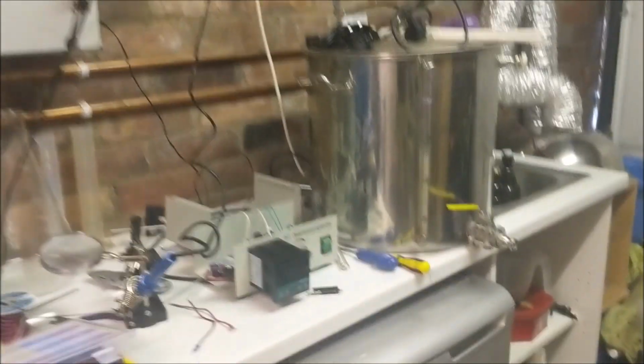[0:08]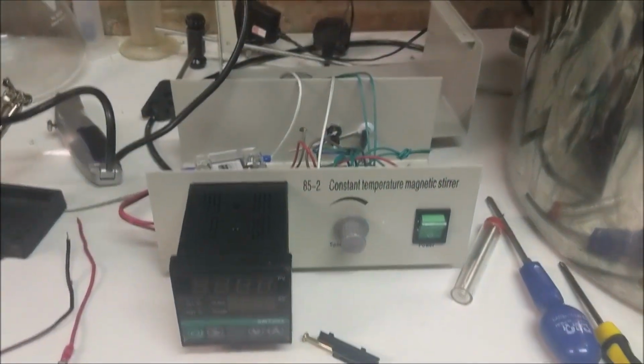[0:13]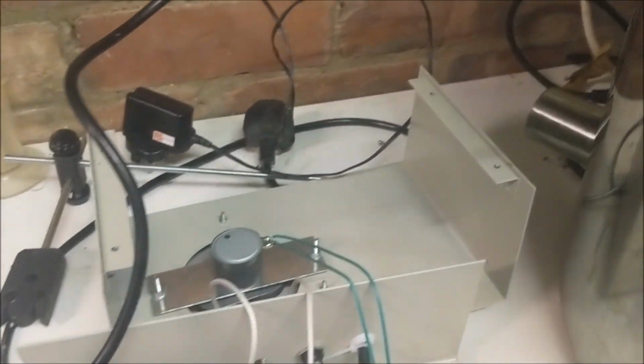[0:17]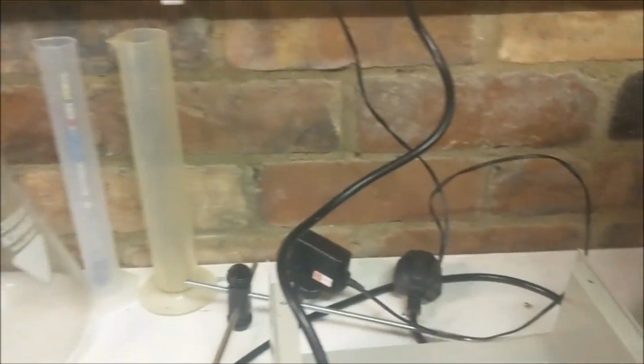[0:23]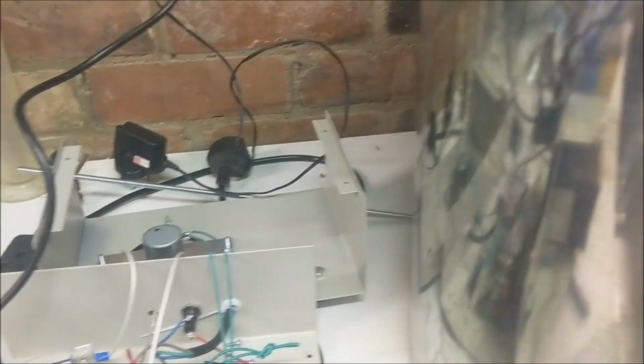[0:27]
Hello, quick video today about rebuilding or fixing this temperature controlled stir plate. So originally this had the rubber sheet controller that came with it. In here it's this that was basically unable to hold the temperature vaguely close to where we needed it. So that's been pulled out. All the stir plate stuff is still in place.
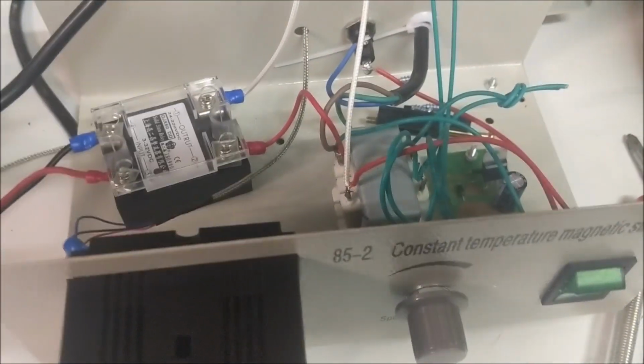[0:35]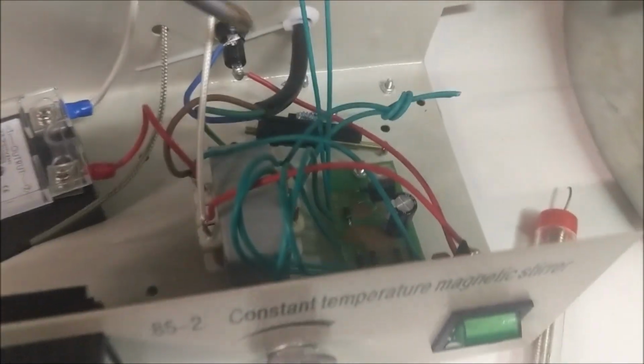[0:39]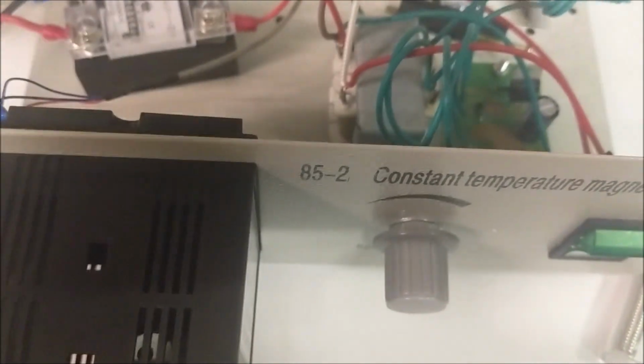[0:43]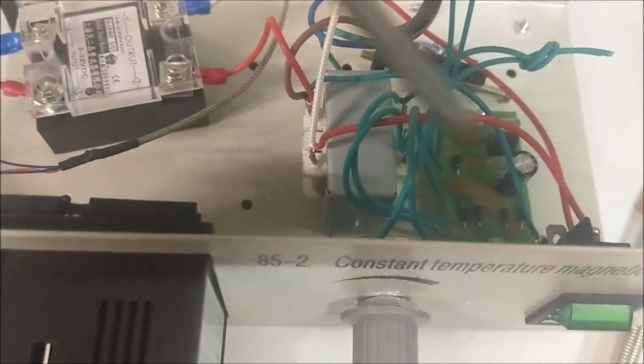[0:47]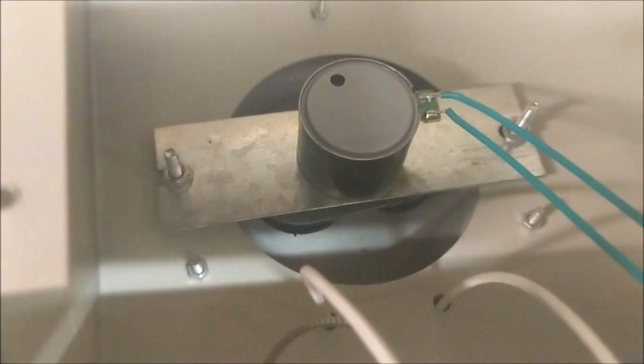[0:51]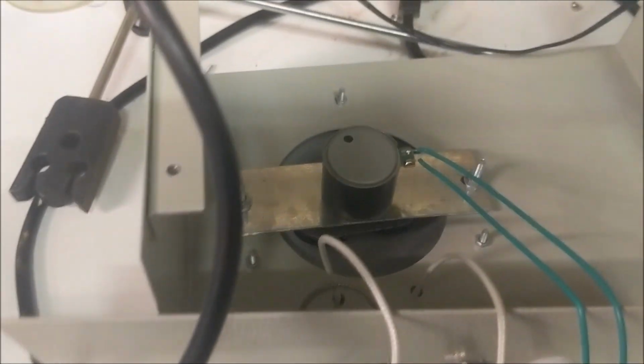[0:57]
So if we look inside here, our power comes in. Let's get a pointy thing. Our power comes in here, goes through this transformer here, and all this side was all done in really obvious green wires to make it really easy to tell what's going on. That's controlling the motor up here, which spins the magnets, which you can see down there wobbling to and fro. That side should still be all the same.
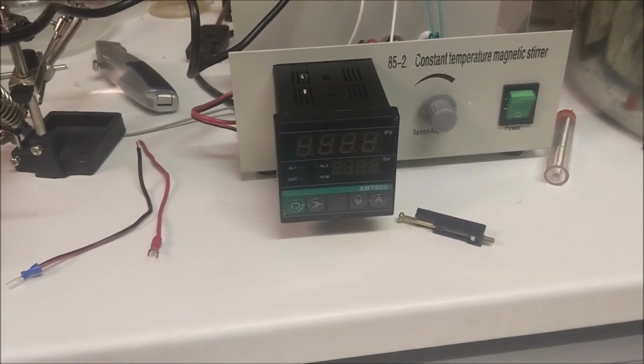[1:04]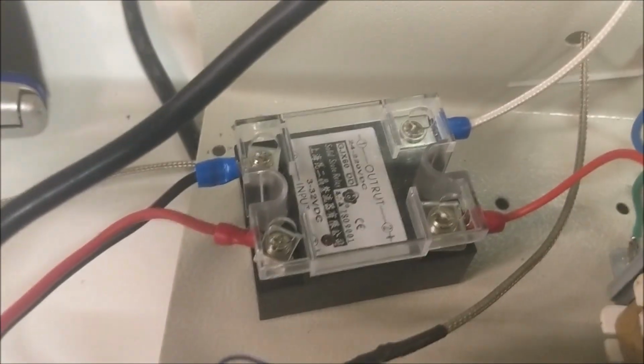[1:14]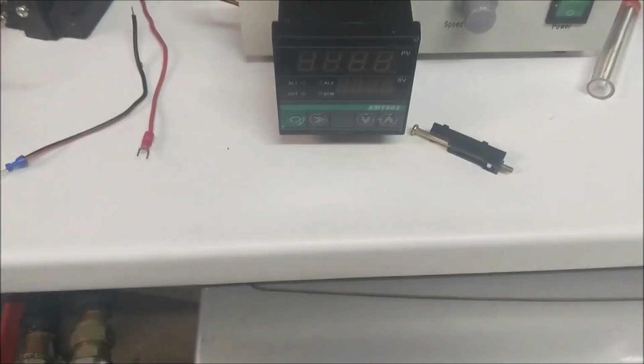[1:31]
Now what I've done is on the other side I'm swapping in one of these PID controllers that happens to fit the gap precisely. I believe that's an 803 controller with an SSR on the output, and that then goes up there in here and will control the temperature theoretically. So I've done most of the wiring so far. I just need to wire on the power supply for the PID, which is what these bits of wire lying around over here are for.
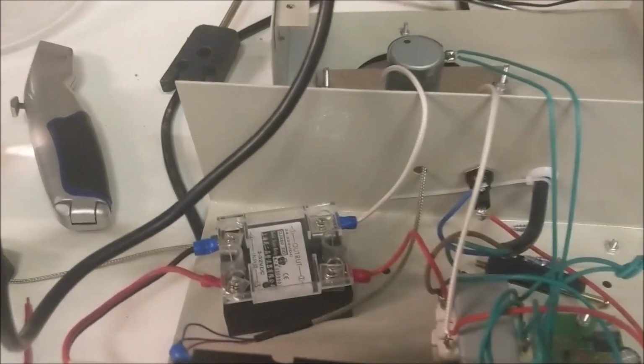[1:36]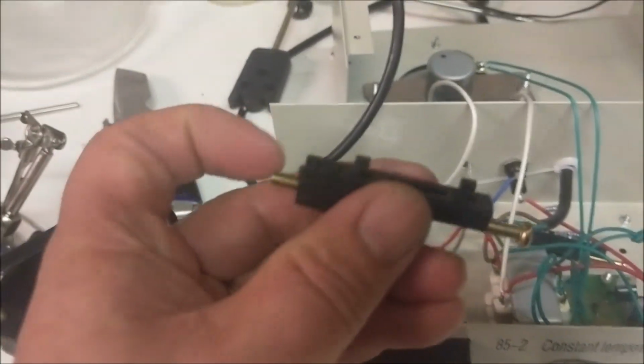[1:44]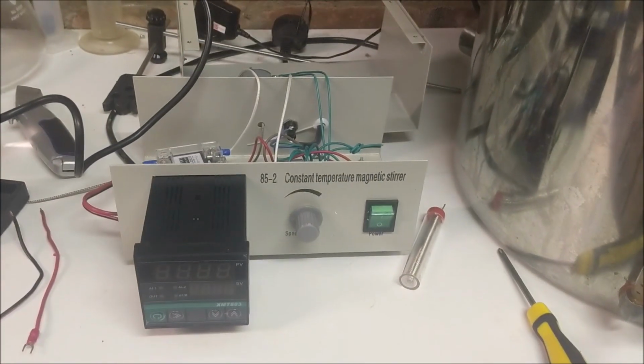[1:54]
So I thought I'd have a quick tour around while I still had it open, and then we will look at it properly when it's closed. But one really hard remaining challenge, these clips that are designed to hold the PID in place, I've got to get one underneath somehow, and that's going to be interesting and challenging. Excellent. I'll show you it when it's up and running in a little bit.
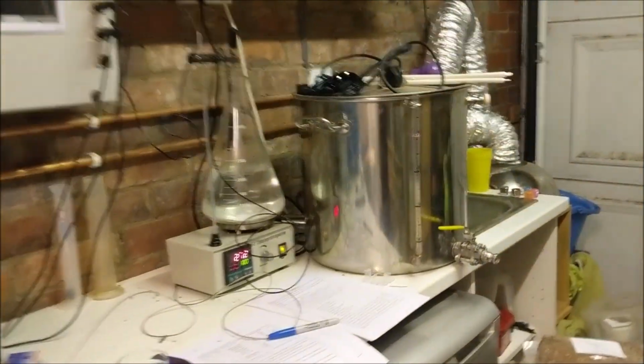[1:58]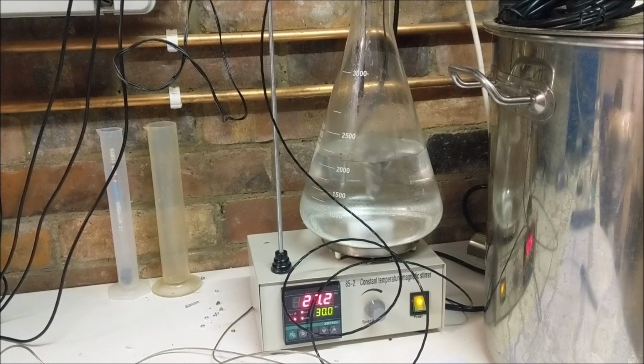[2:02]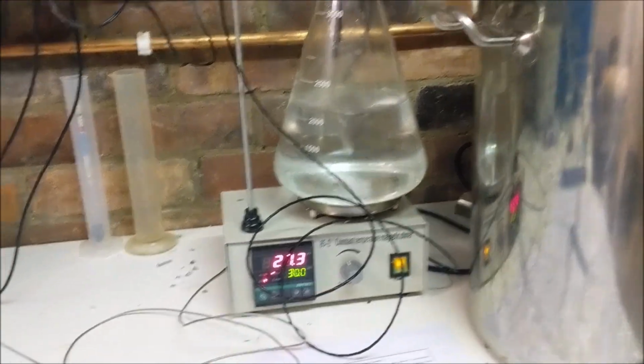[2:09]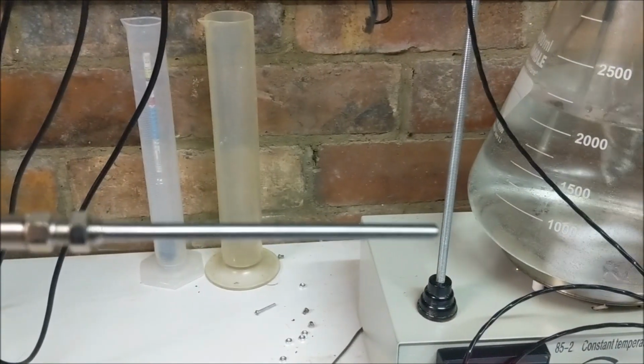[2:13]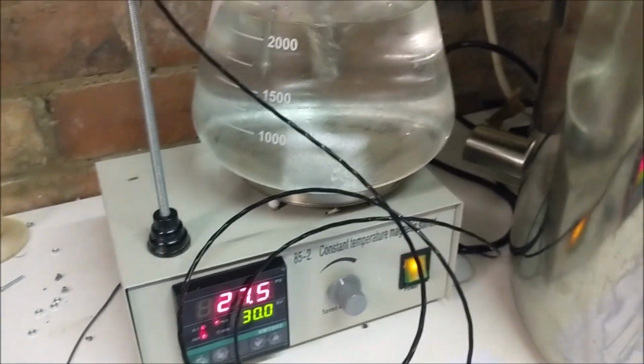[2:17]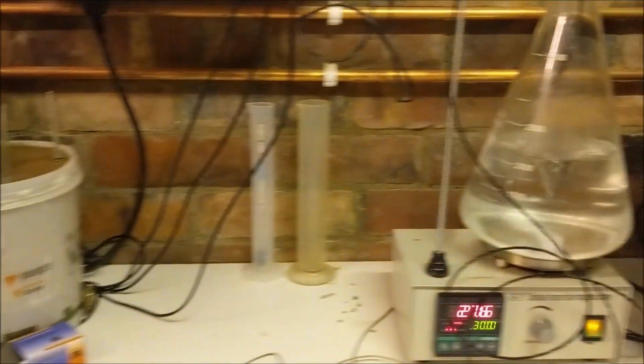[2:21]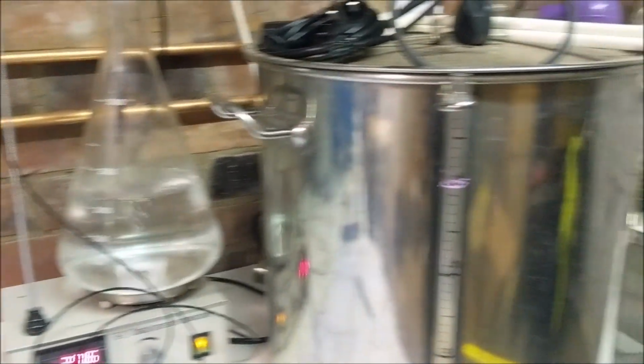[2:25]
Hello and welcome back to a slightly epic, more epic, temperature controlled stir plate setup. First change from what I had when you saw me putting it together previously is I put in a temperature sensor, supposed to be PT100, that came off the internet. If you set it accurately at say 0 degrees C in some lovely iced water, it was then 5 degrees off at 20 degrees C, so basically useless.
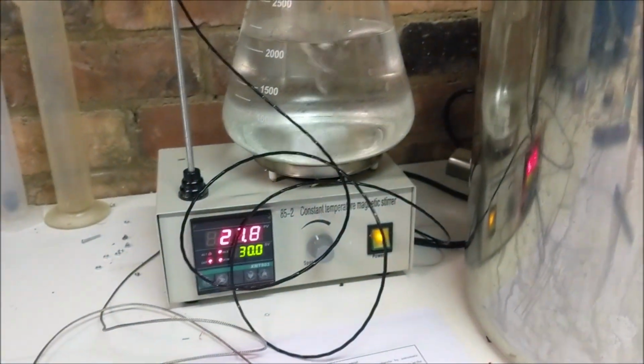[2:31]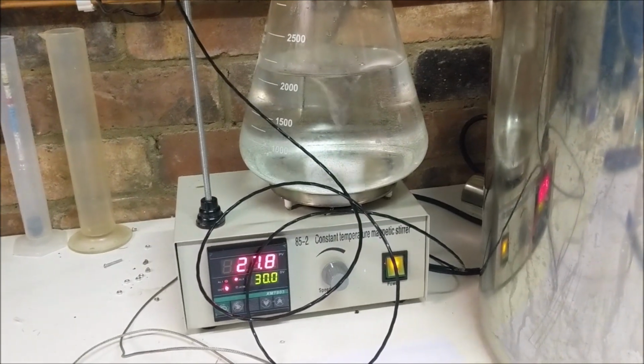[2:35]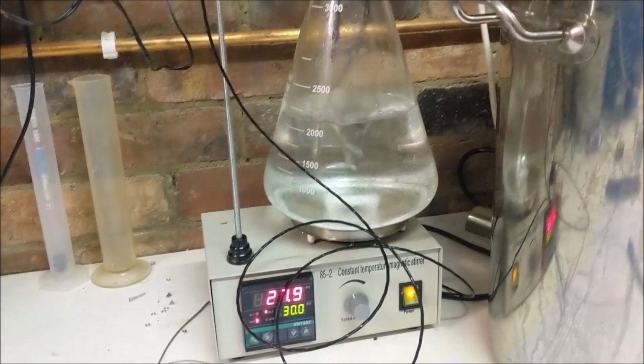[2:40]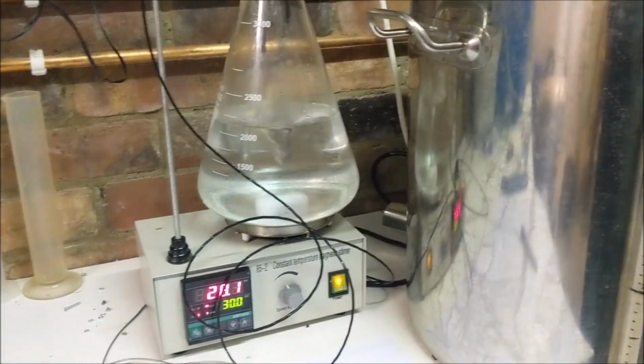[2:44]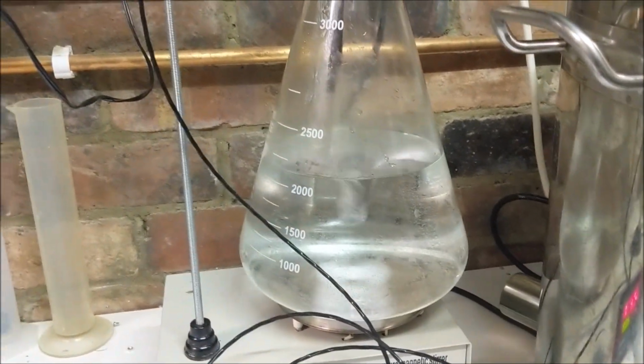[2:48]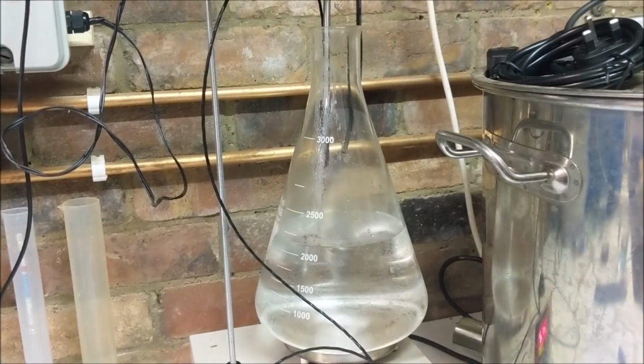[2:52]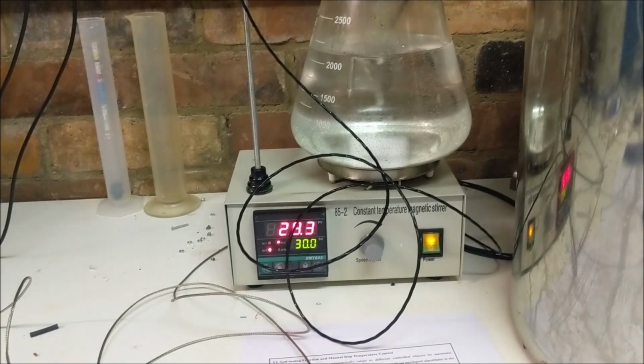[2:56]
So I bought a slightly nicer one, which is now the one that's connected up there, and that appears to be, well, reasonably precise, and with a little bit of offset it's accurate, which is nice, sort of two things you need, and it's accurate over quite a wide temperature range. It's an improvement. So after that minor struggle getting some new bits, I then tried to get the whole thing working, and struggled.
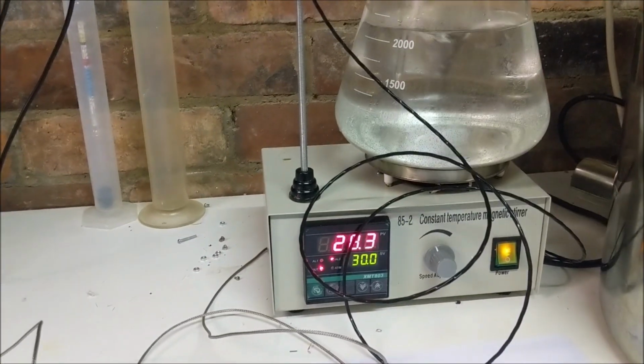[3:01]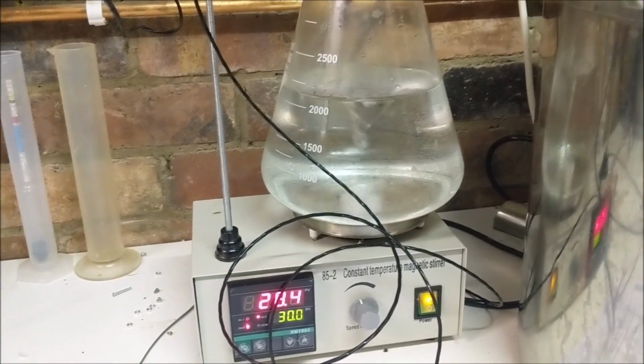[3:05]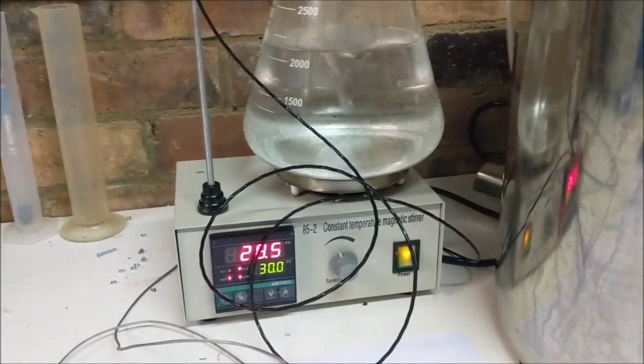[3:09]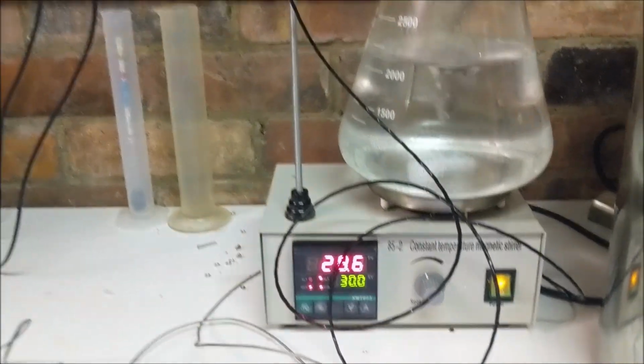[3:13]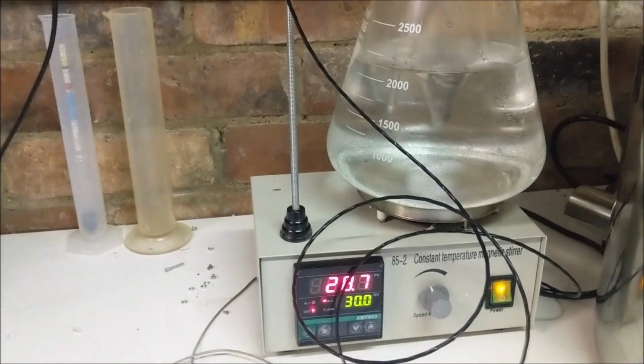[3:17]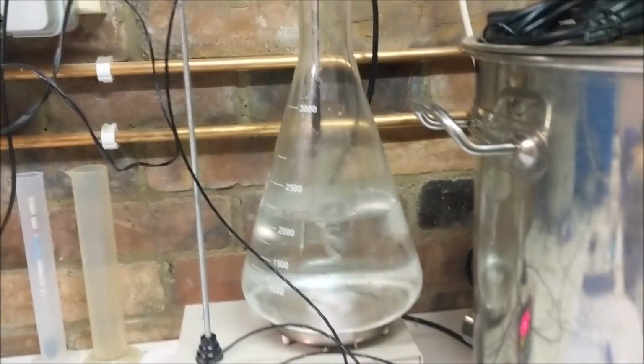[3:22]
This thing seemed to be heating when it's supposed to be cooling, cooling when it's supposed to be heating. After a bit of fiddling around, I worked out that firstly it was set to control the fridge rather than the heater, and secondly, in its default state it was set as a switched controller, like the one I've got down here on the fridge. No, I haven't got it there anymore.
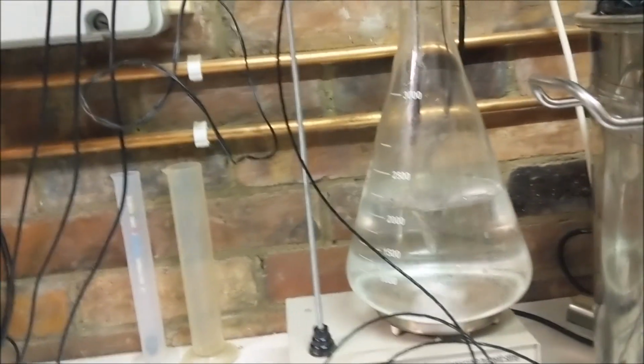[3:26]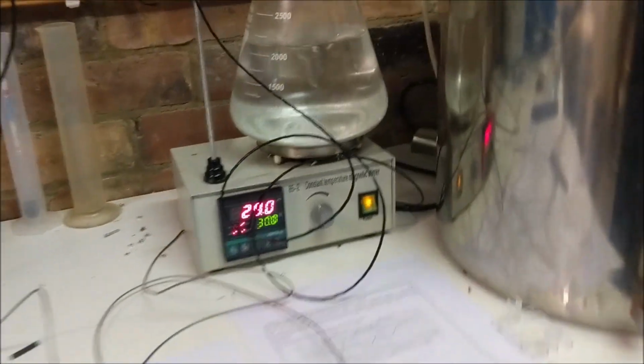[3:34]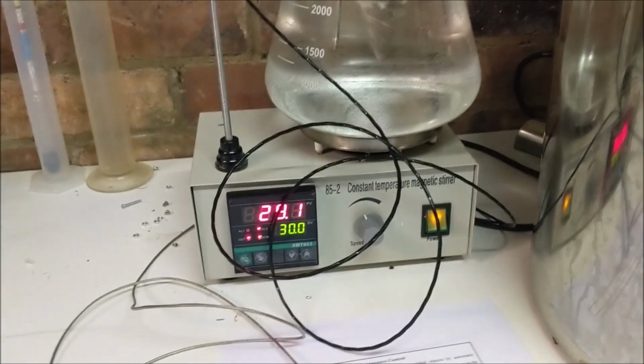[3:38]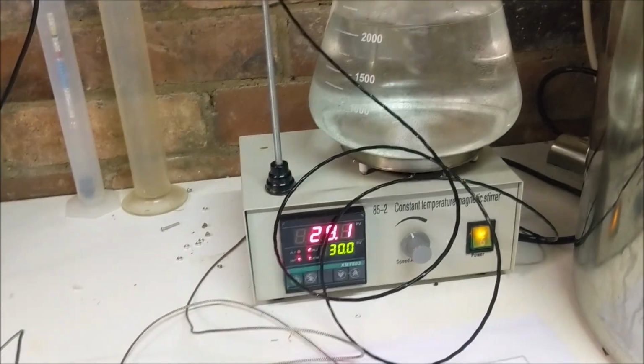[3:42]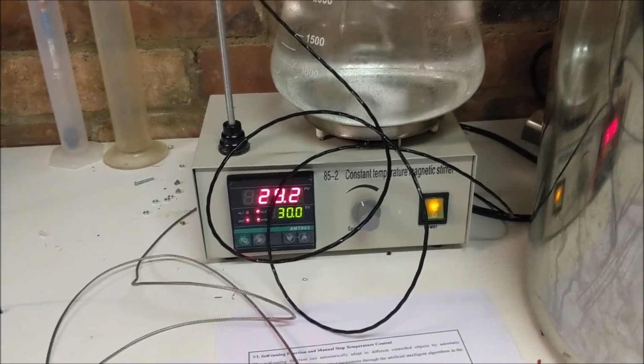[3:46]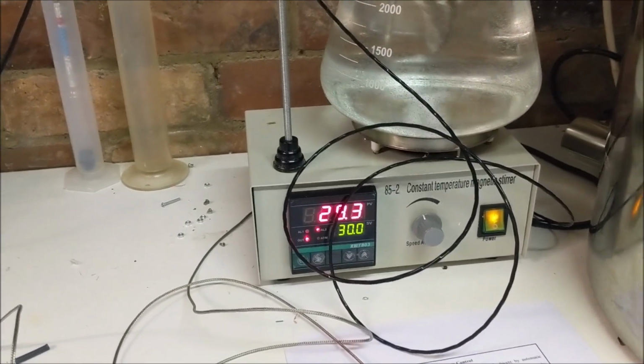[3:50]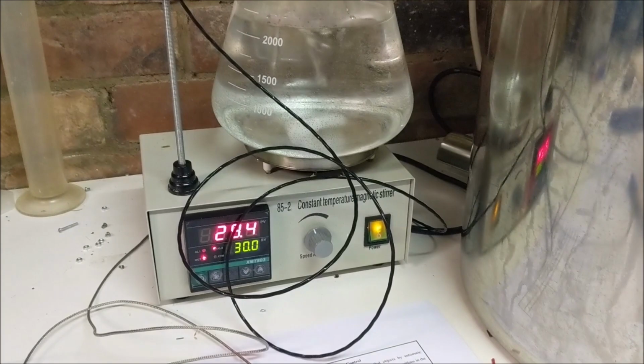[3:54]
Like the one in my brewery control box, these things, he says, going down to have a look, those little things, that's a switch controller. So you needed to change the mode, and that's hidden in some incredibly obscure menus. Controls of this are slightly odd. The instructions are obviously translated from the Chinese via the Serbo Croat, so are a little bit hard to actually understand. At the moment it's trying to run an auto tune cycle, and I'm going to see what happens. Hopefully we'll get it working properly shortly.
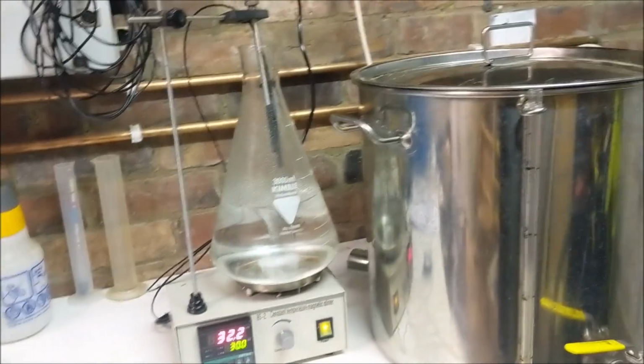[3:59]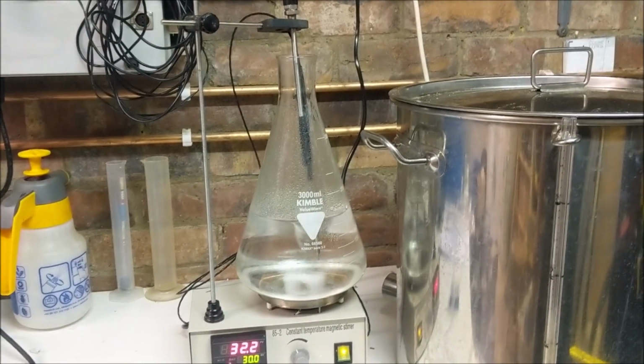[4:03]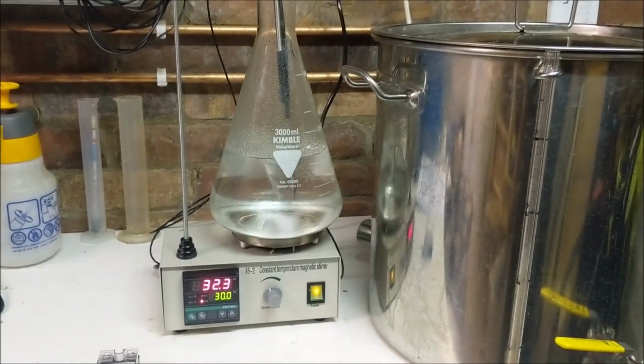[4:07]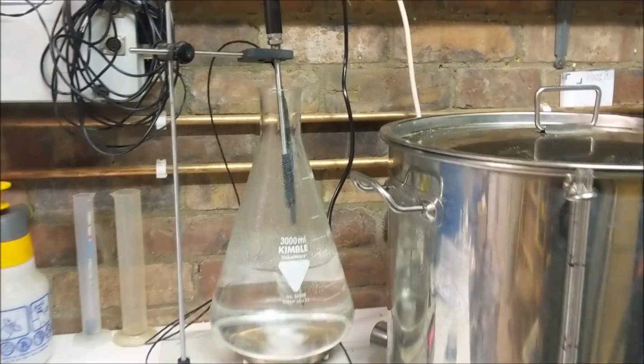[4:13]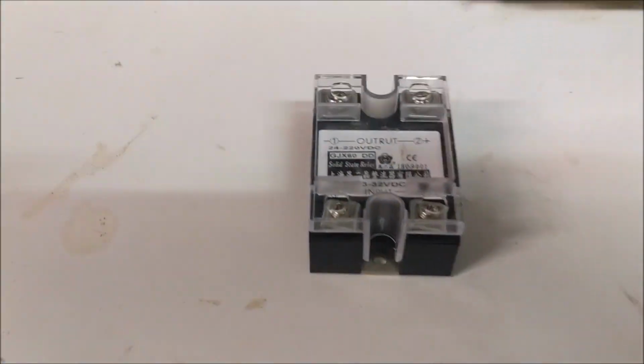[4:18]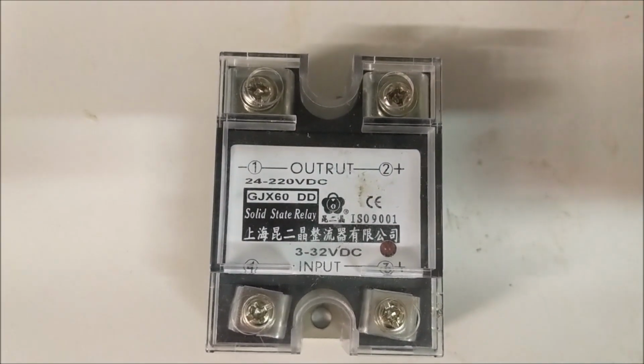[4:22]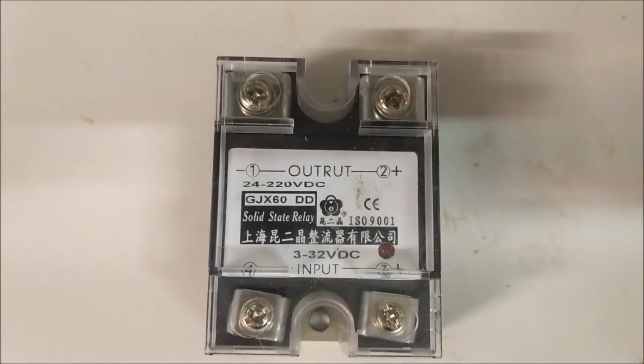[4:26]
Right, there's been probably about a week since the last video on the temperature controlled stir plate due to yet more technical problems. Now it appears to be working properly and it's running a tuning cycle, so hopefully it will get all the parameters set correctly. Now the issue I had was with the SSR. Originally I had one of these SSRs. I was slightly suspicious to start with, about the quality of this thing, and I was unfortunately proved right.
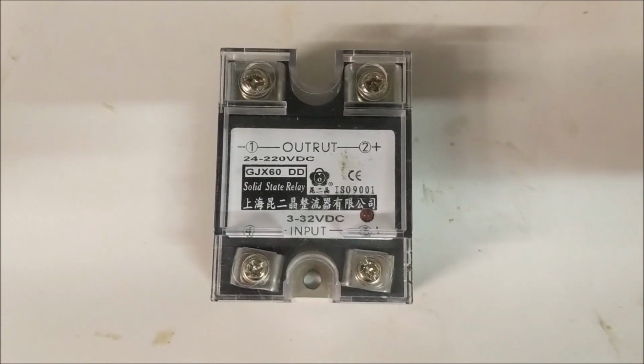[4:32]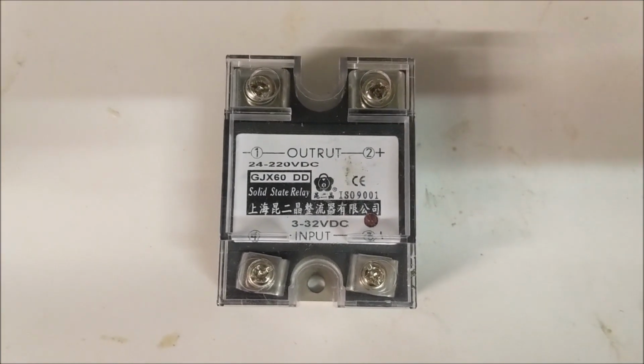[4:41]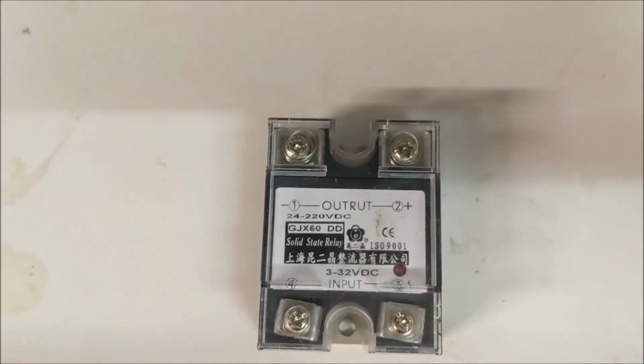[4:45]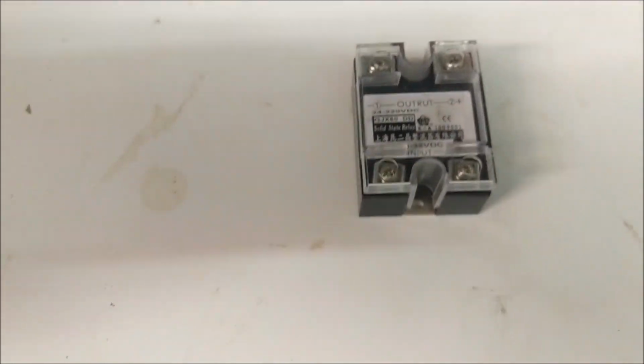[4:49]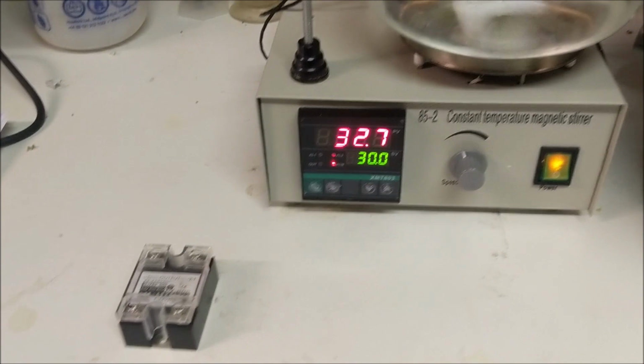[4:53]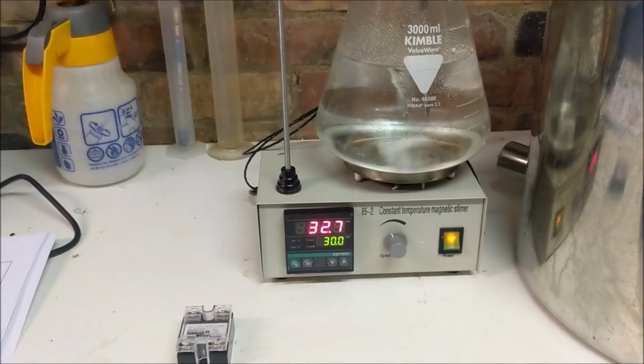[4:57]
Under zero load, when you were driving no heater off the output, it seemed to be working fine, just using a multimeter to test it. But as soon as you put a load on it of any kind, it just leaked so much that the heater never actually turned off. So the temperature just kept going up and up and up, whatever the PID thought it was doing. So quick order for a new one off the interwebnet, and now we have a slightly better quality one.
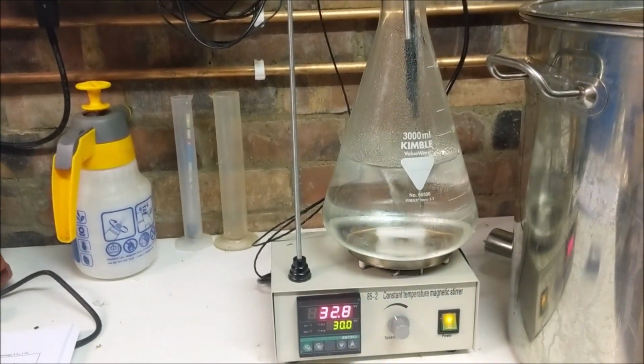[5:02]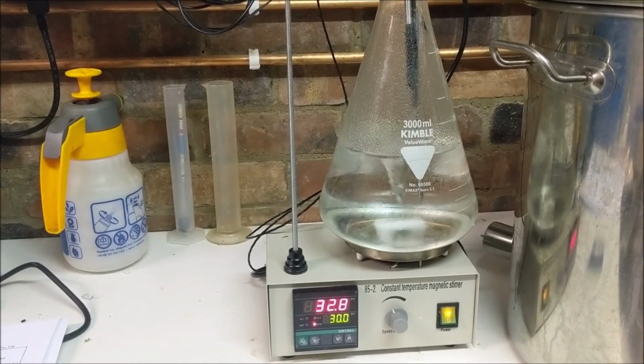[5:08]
They look like the white ones you usually see sold with Inkbirds. Seems to be working perfectly. So hopefully we'll be able to get a starter on this soon. Not that I really need the heating in this weather, but it's reassuring to have it working properly. Excellent. Hopefully that's the end of that project, and the next time we will see this, it will be actually running a starter.